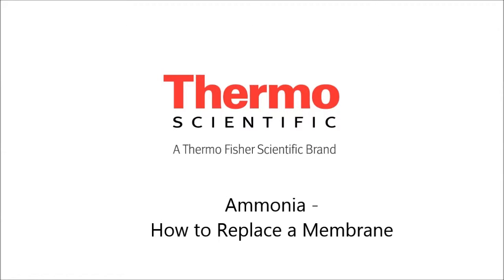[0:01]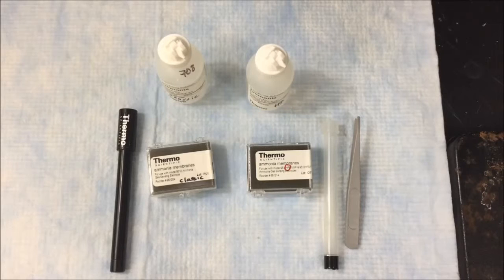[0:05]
Greetings! In this video, we're going to take a look at how to replace the membrane on a Thermo Scientific Orion ammonia ISE probe. So, here we go. Here are the materials needed to replace and refill the two versions of the ammonia ISE.
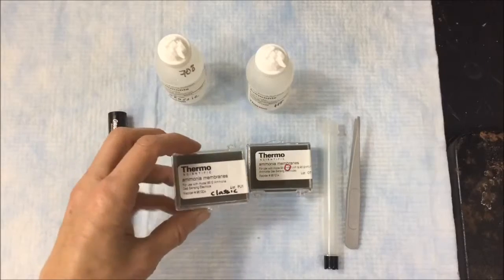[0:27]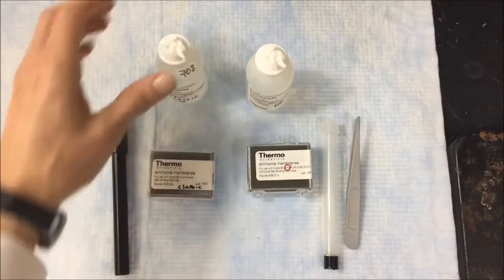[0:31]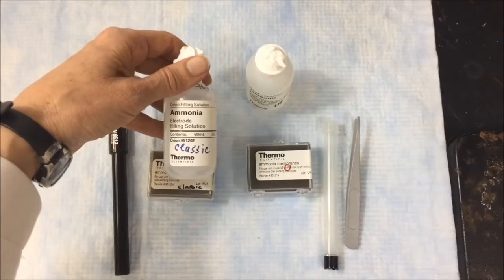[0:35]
This is the Orion 9512, which is the standard or classic ammonia ISE. These are the membranes which go with that, part number 951204. And this is the fill solution that goes with that, part number 951202.
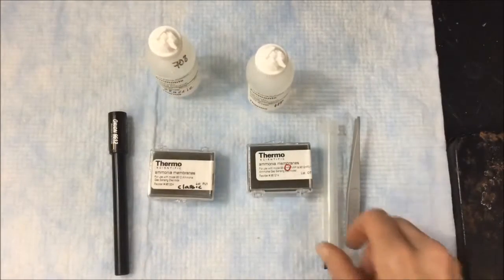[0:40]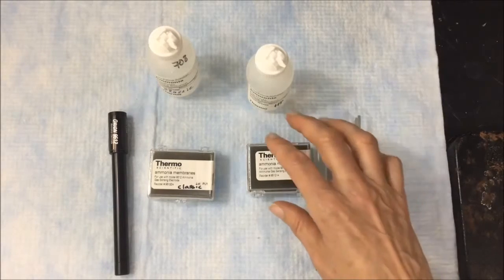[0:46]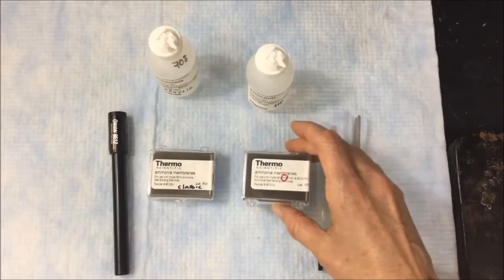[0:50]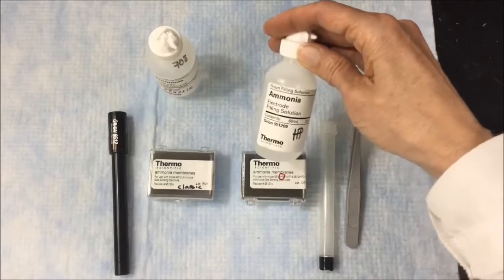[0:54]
I also have the Orion 9512 HP version. This is the HP body. The membranes that go with the HP are part number 951214. And the fill solution for the HP is part number 951209.
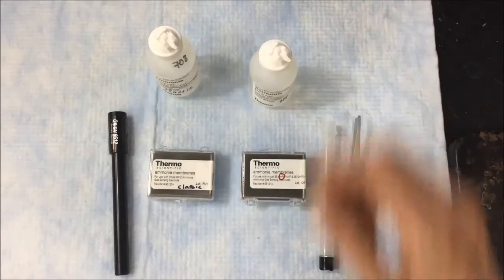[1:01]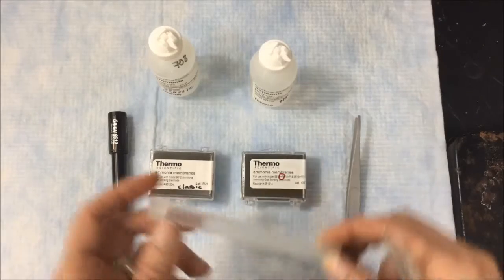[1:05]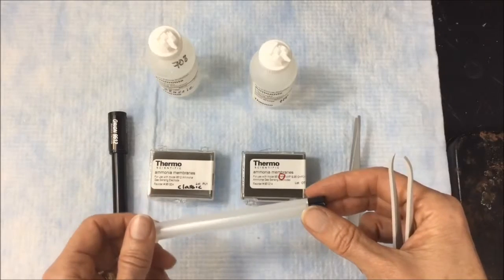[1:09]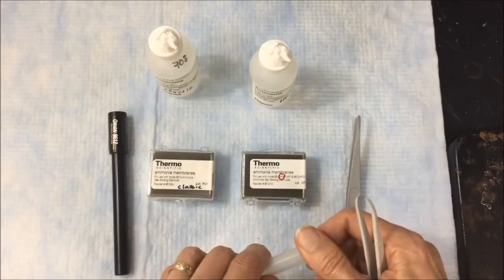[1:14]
Today, I'm just going to work with the HP. Replacing the membranes for both models is similar, so once I do this, you'll get a sense of how to do this for either model. First, we'll take off the retaining cap and remove the old membrane. Like this.
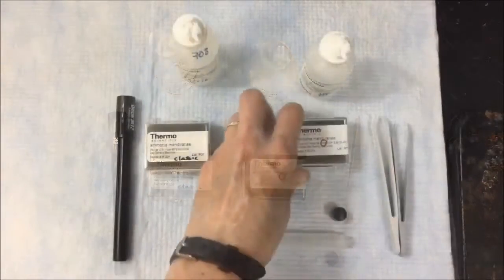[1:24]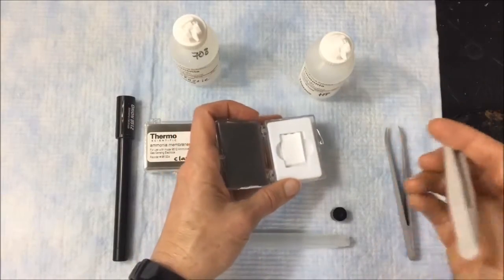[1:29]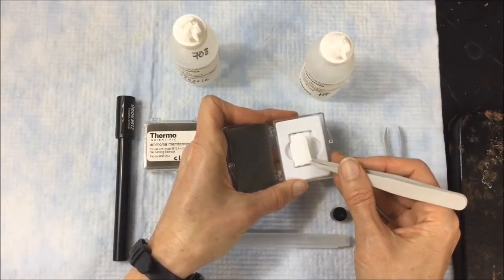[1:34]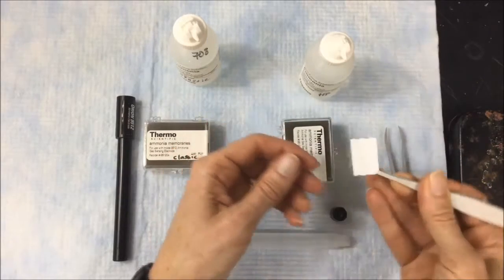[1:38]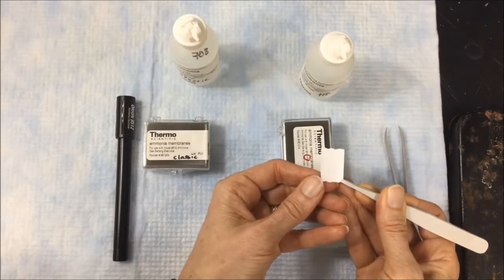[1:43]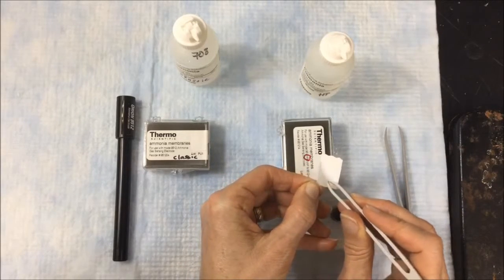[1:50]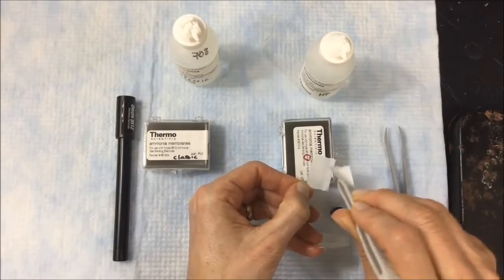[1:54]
That was easy. Okay, here's the fun part, getting the membrane out of the box and separated. Each membrane is separated from the next one in the pack by a rigid backing. We need to peel this away. Here we go. Notice that I'm just touching by the edges. And I've got the edge here. So this very flexible, floppy piece is the membrane. And this rigid piece is the separator.
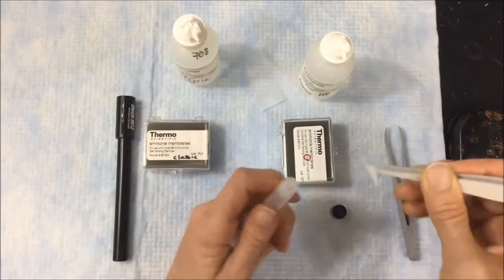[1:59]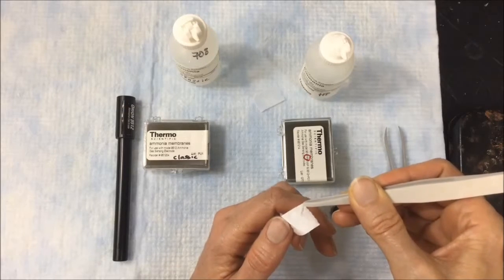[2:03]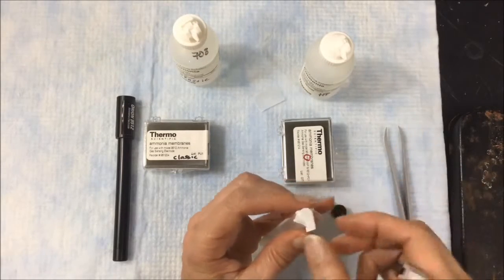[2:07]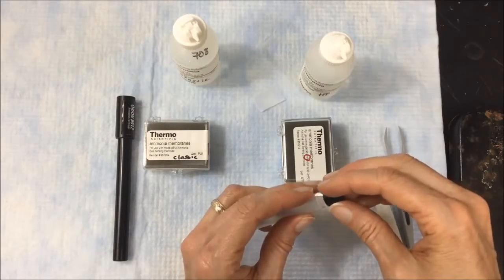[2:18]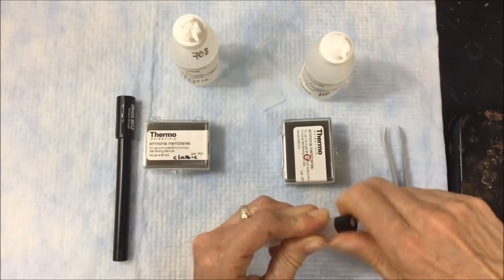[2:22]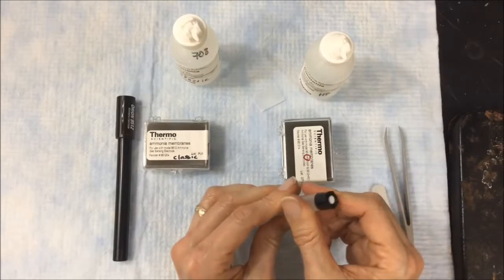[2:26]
We need the membrane. I'm going to lay the membrane over the cap here and orient it towards the center. Then I'm going to start smoothing it down like this, getting rid of any wrinkles and making a nice, flat, taut surface. Apply the cap, and here we have it, a brand new membrane installed. The body is ready to be filled with the appropriate fill solution.